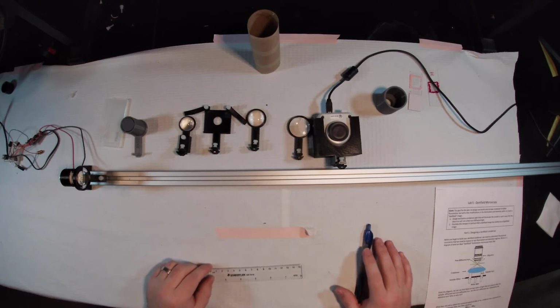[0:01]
All right, welcome back. This is Lab 6, Darkfield Microscopy. So in the last lab, we had fully assembled a Kohler microscope, but for brightfield illumination, where our contrast was dark compared to our background. We're going to be inverting that optically in this lab with darkfield microscopy.
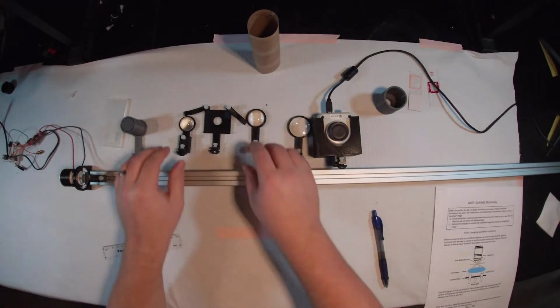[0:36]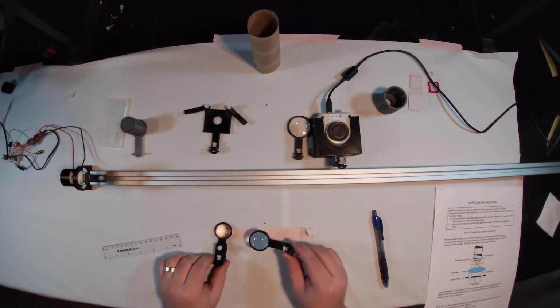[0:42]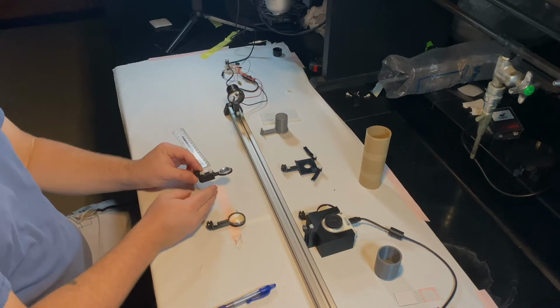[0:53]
So the first thing that we have to consider with darkfield microscopy is there's going to be restrictions, as you should remember from your exam, on the numerical apertures of our condenser and objective lenses. Now, these are actually labeled condenser and objective, but today we're not going to be using them in those roles. We're actually going to be flipping them such that the lens labeled objective is in fact our condenser, and our lens labeled condenser is in fact our objective. So we're going to be figuring out why that is mathematically before we begin assembling anything.
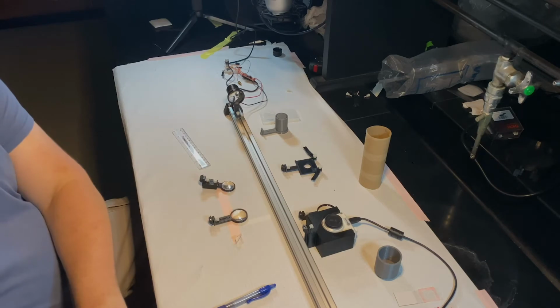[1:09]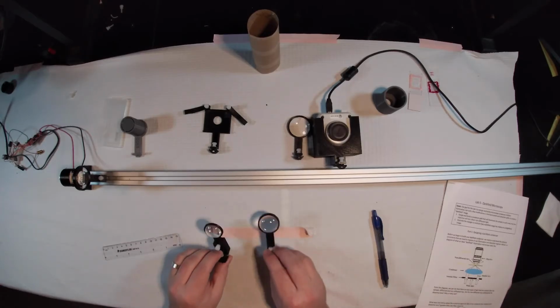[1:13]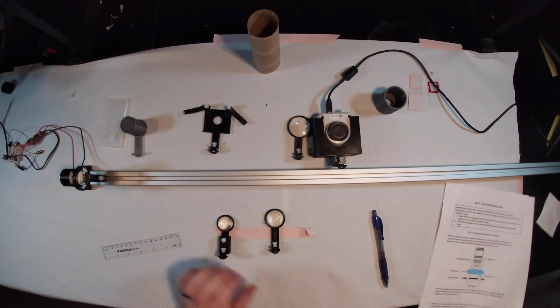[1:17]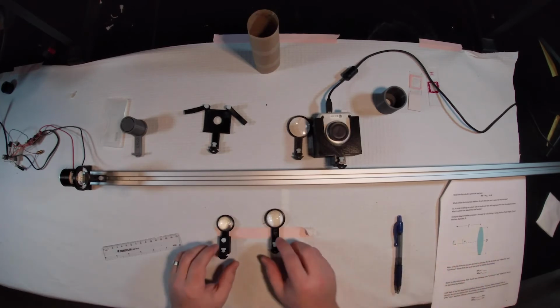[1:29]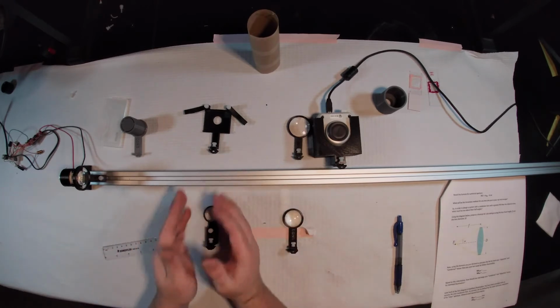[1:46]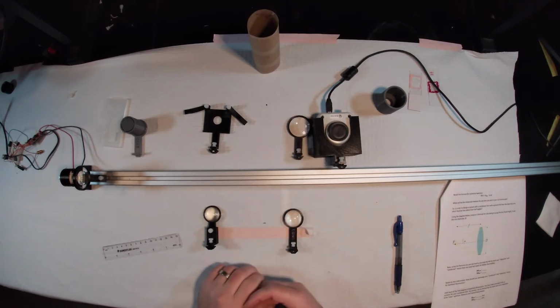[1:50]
So what you're going to be asked to do is calculate the relative numerical apertures of both of these lenses. In order to do that, we've provided you a nice diagram on your labs that relates the focal length of a lens to its half angle and its diameter. And from that, you should be able to calculate numerical aperture. So you should know which of these lenses needs to have a greater numerical aperture for darkfield microscopy. Does our condenser lens need a greater numerical aperture, or does our objective lens need a greater numerical aperture for darkfield to work? You should be able to answer that, and then we're going to calculate what the numerical apertures of these lenses are.
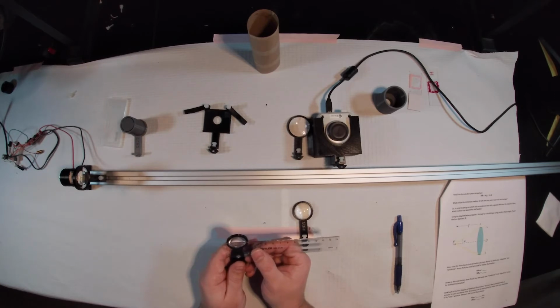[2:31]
So you should go through and derive that formula theoretically to calculate the NA just from knowing the diameter and the focal length of a lens. I will provide you with the diameters now. So for our lens that's labeled objective, our total clear aperture looks to be about 24 millimeters. That is the diameter of the light that it allows through.
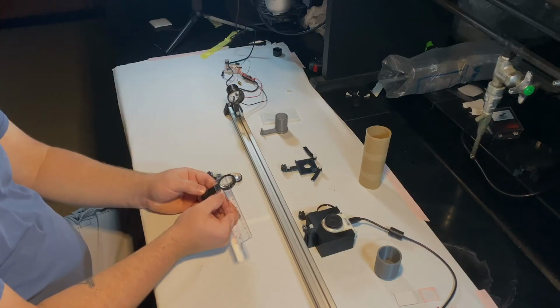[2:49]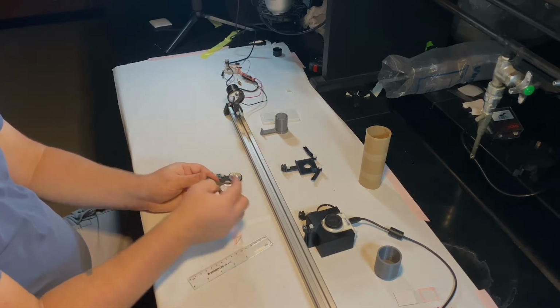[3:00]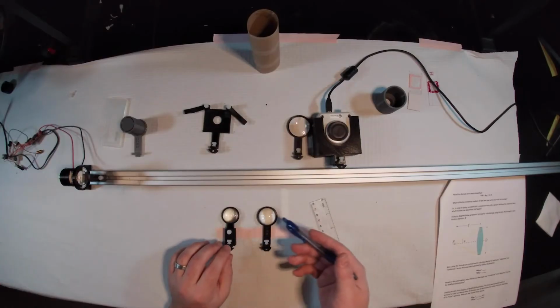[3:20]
Our lens labeled condenser, our diameter is 22.5 millimeters. So that is the diameter of the clear aperture where light is allowed to pass through. You should already know these focal lengths from Lab 2. Go ahead and reference those if you don't have them handy. And using that formula that you derived, go ahead and calculate what is the numerical aperture of each of these lenses. And I'll go ahead and pause the video for that.
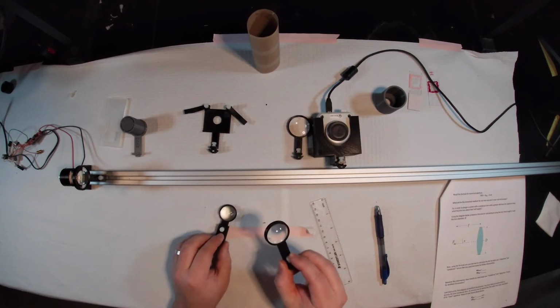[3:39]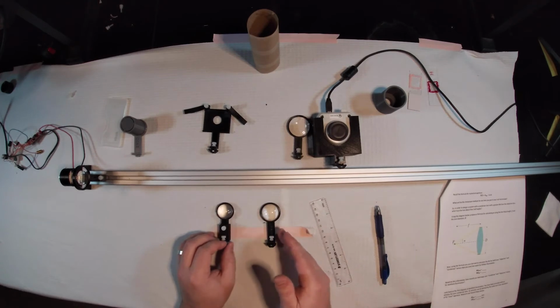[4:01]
So now that you've calculated the numerical apertures, you should know that obviously our objective lens, the one labeled objective, has a greater numerical aperture than our condenser lens. So we have to use this lens labeled objective as our condenser, because in darkfield microscopy, you need a higher angle of illumination that cannot be collected by your objective. So we actually have to sacrifice a bit of resolution by using our second best lens as our objective lens, which does cut down on the total amount of light that we let through and the total resolution of our system.
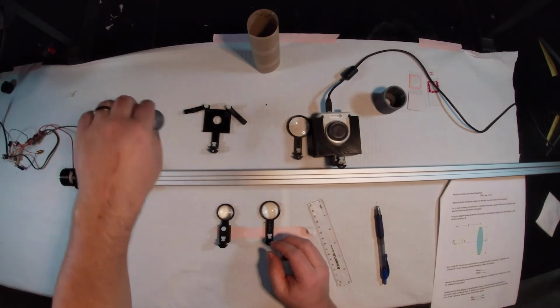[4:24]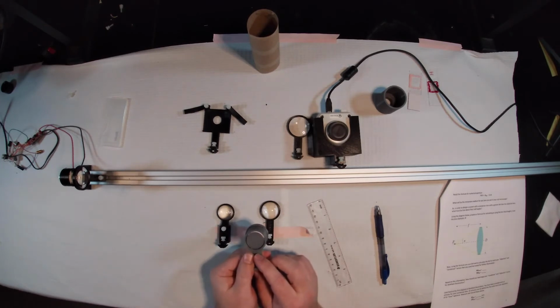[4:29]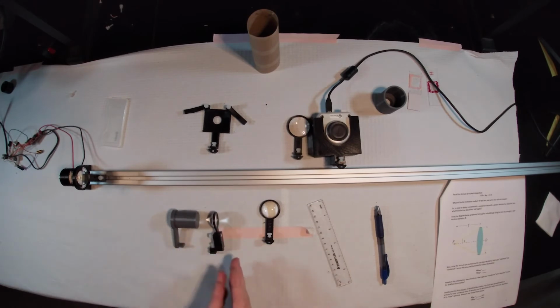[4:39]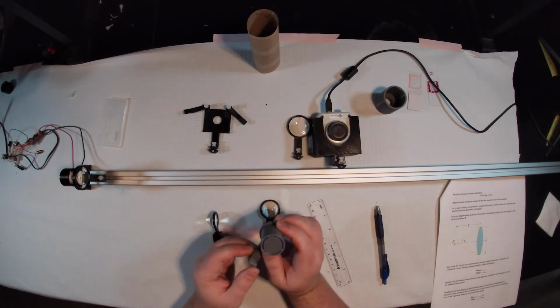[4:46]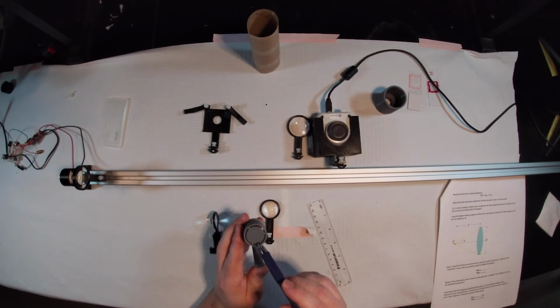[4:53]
So finally, for darkfield, you do need an annulus. This is going to be placed somewhere behind the condenser lens that we are actually using, the objective lens that's being used as our condenser in the system. We will find a place somewhere behind it that we will use to restrict out the lower angle light and let through just an annular sliver of light.
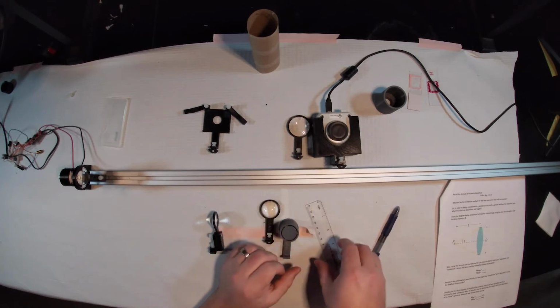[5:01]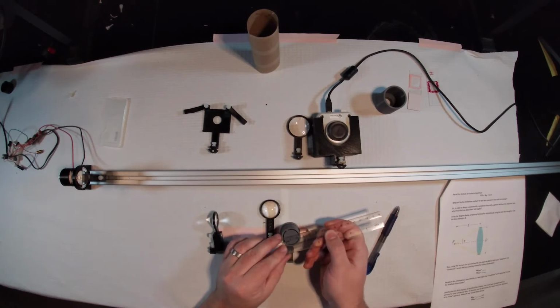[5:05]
So I will go ahead and measure these dimensions. An annulus has an inner and an outer diameter. So the outer diameter is about 24.5 millimeters. That is the distance from the outer edge to the outer edge. And the inner diameter is 23.5. That is the length from the inner edge to the inner edge. So this was specifically designed with this lens in mind.
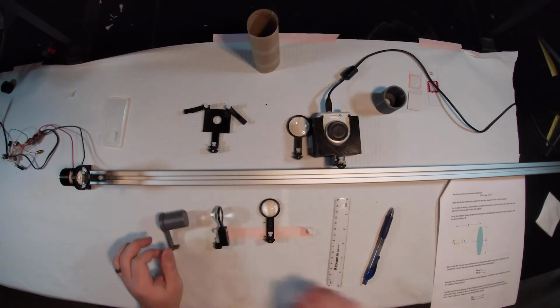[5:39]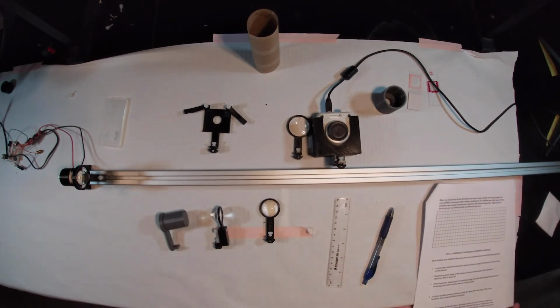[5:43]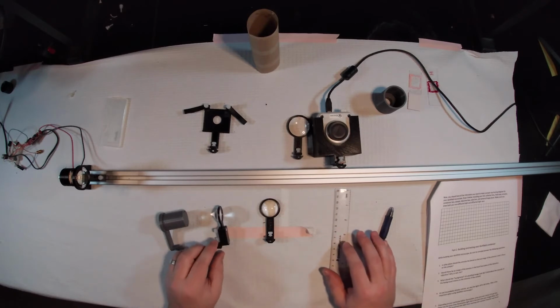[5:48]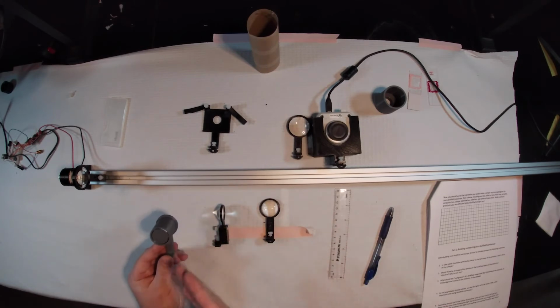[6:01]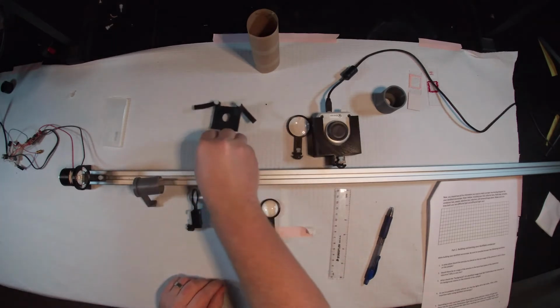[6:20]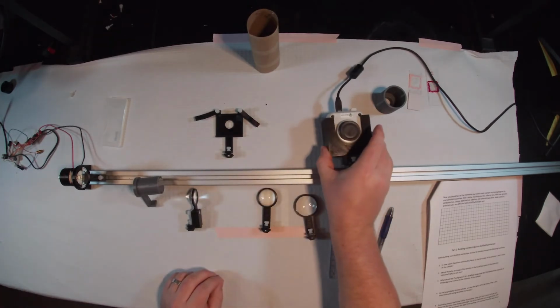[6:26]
So you go ahead and record those down, and now you have all of the information you need to do a proper ray tracing diagram of this darkfield microscope, even though I haven't assembled it yet. We're not going to be using our iris today because our annulus will act as our iris, because we only want a very small sliver of light getting through. And we have our nice little collimated light source. We're going to put our annulus, our condenser lens, our sample holder, our objective lens, our tube lens, and then finally our camera.
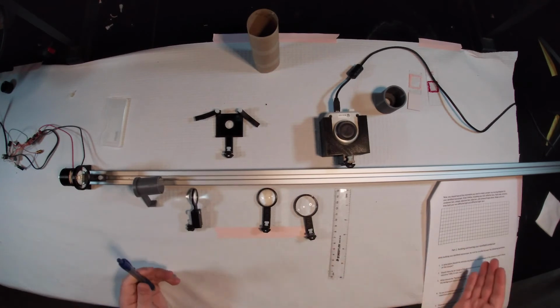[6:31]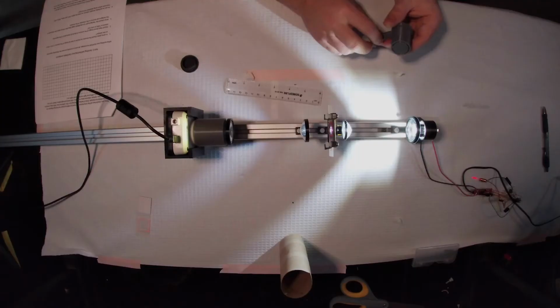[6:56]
So as I am assembling this microscope, go ahead and draw out, using the graph paper on the lab that we provided for you, the ray tracing diagram for this Darkfield microscope. You can pause the video. When we come back, we will have this microscope set up, and I will go through the finer alignments. All right, so hopefully you have made a nice ray tracing diagram of what you expect this Darkfield
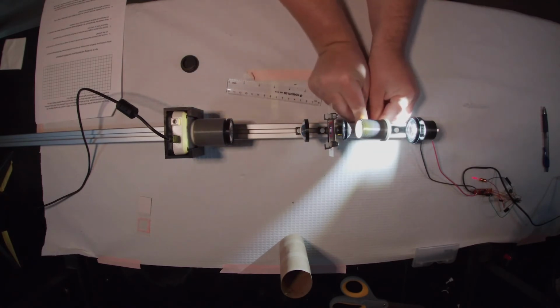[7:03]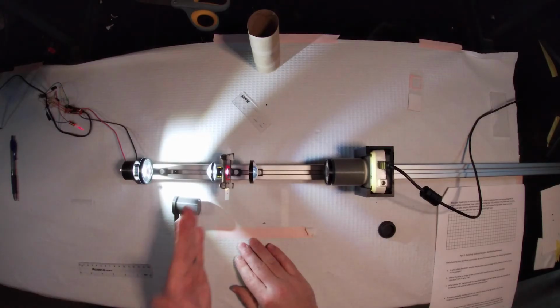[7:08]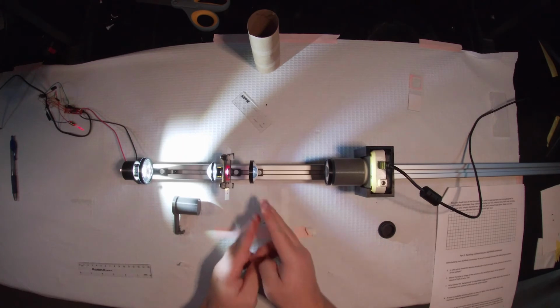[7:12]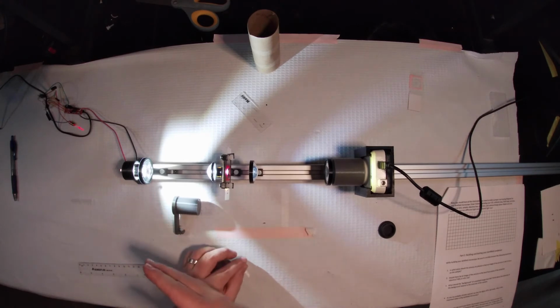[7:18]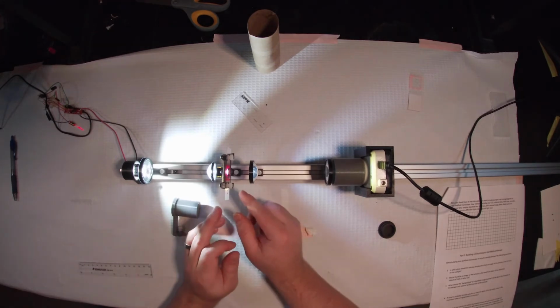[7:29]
microscope to look like. In the meantime, I've been building and aligning this. You can see we have the objective lens in the condenser position and the condenser lens in the objective position. Again, just to make sure that our condenser has a higher numerical aperture than our objective, and in our kits, this is the highest numerical aperture lens that we have. And I already have mounted a sample of my hair.
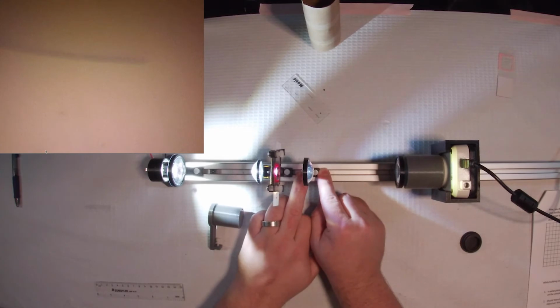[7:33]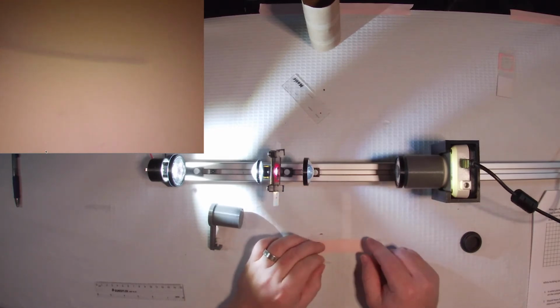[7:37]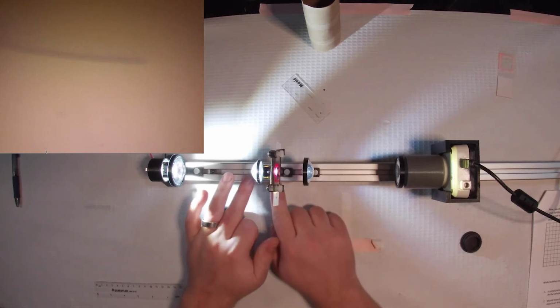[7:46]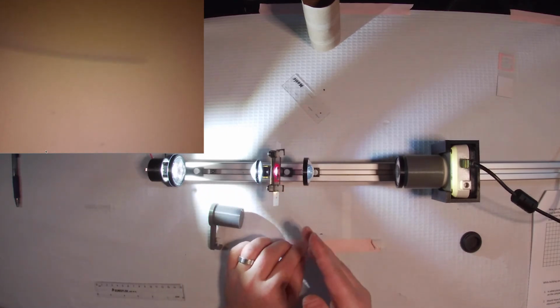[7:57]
You can see that it looks similar to what we've seen in the previous lab, where we have a bright background and dark foreground because the hair is effectively just absorbing the light. It's not going to look as crisp because our condenser has such a high numerical aperture that it does tend to under-illuminate in terms of the field of view, the total area that is picked up by our objective lens, but that's just a flaw in the system.
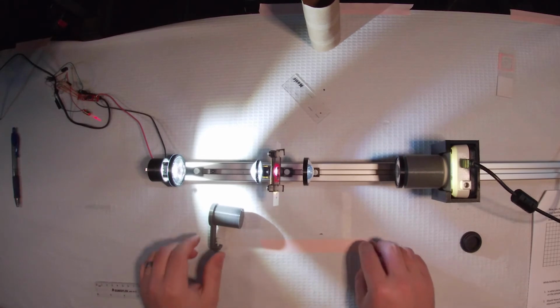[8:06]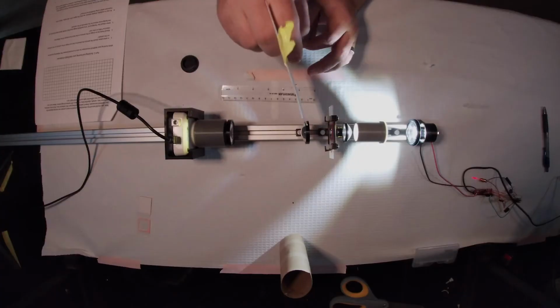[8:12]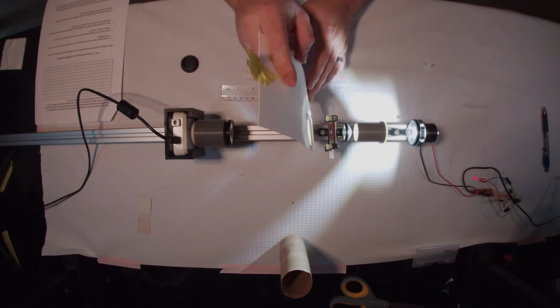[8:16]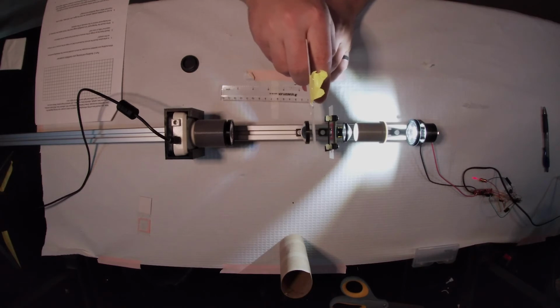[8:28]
What I haven't installed yet is this annulus, right? This is what is essential for giving us that dark field contrast. We're going to need to put this somewhere in between our collector lens and our condenser so that the image of this annulus as cast by the condenser is going to be perfectly out of focus on our sample, but still not collected by our
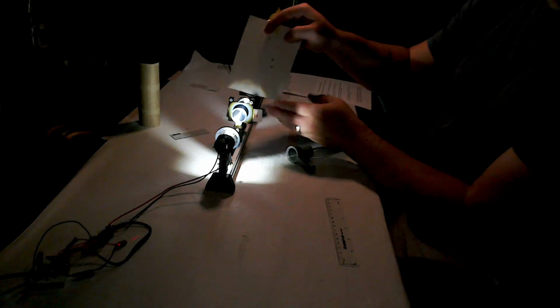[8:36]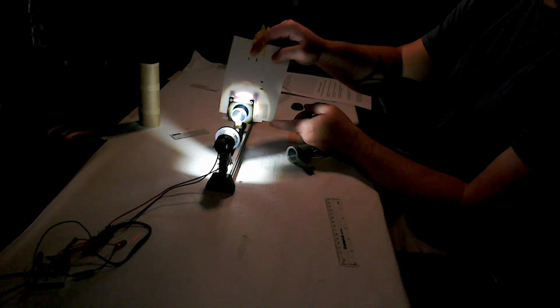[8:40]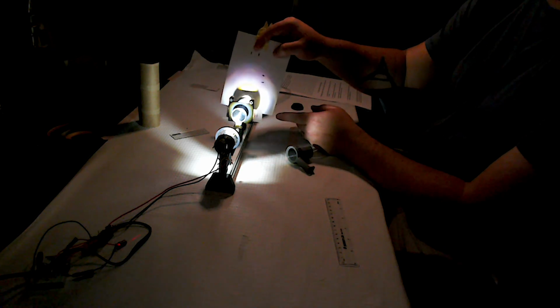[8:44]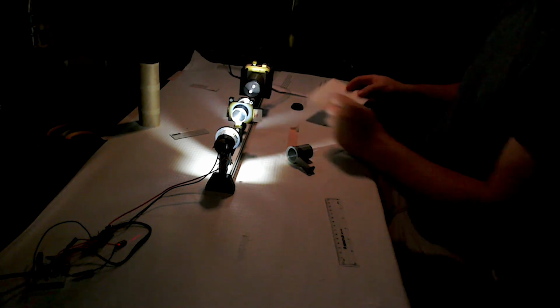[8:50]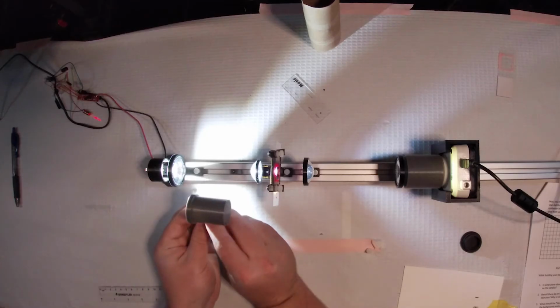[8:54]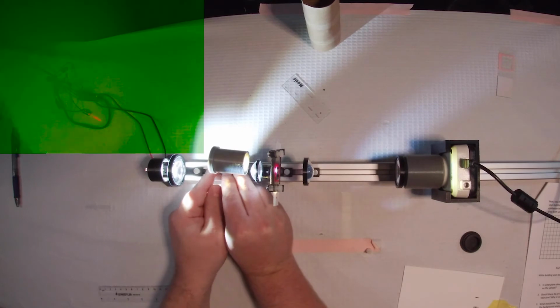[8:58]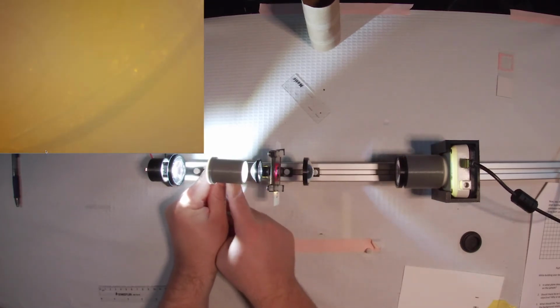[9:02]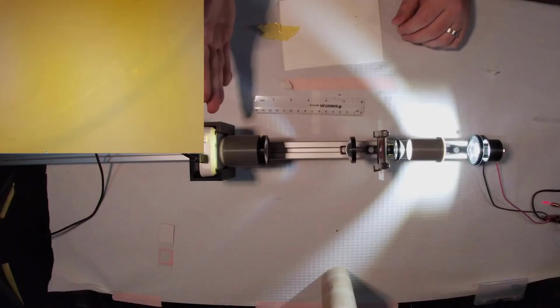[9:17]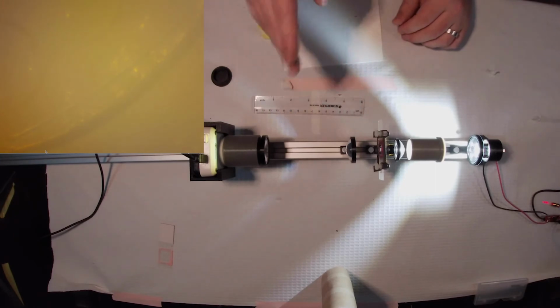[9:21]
objective lens. And you can see that obviously a lot of light is getting through our sample and it hits our objective lens, and you end up with dark contrast and a bright background as a lot of light is passing by this objective lens into our tube lens. So if we go ahead and install this annulus here, tighten that down, and I will try to position it.
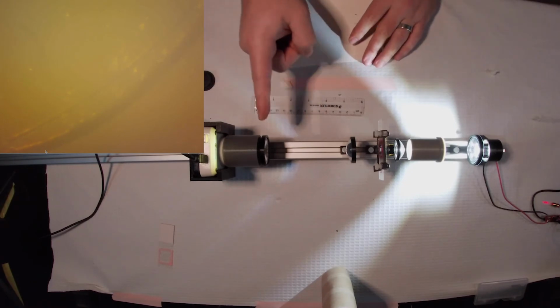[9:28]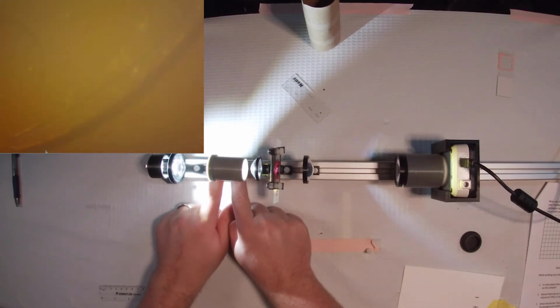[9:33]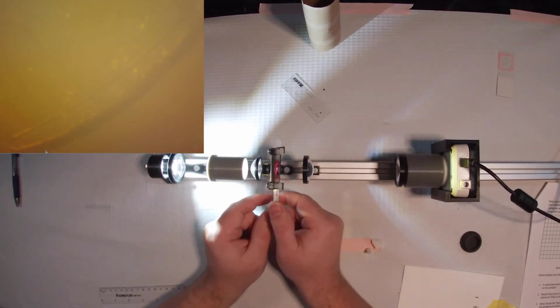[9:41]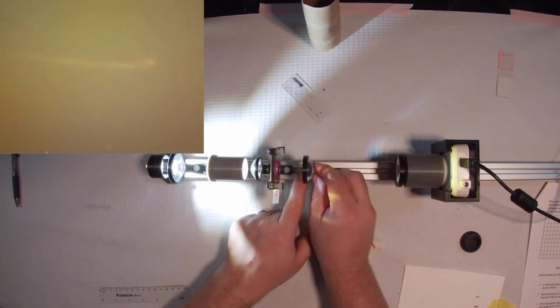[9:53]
Right, so you should have probably determined that the optimal place for our annulus is in the back focal plane of this condenser right here. So you can see it's very sensitive to any sort of changes in alignment. I'm just trying to adjust it so that my background is as dark as possible. Let's try to move to, yeah, I seem to have lost my hair in that installation, but there is my hair once more. I will do a little bit of focusing just to make sure that that's nice and
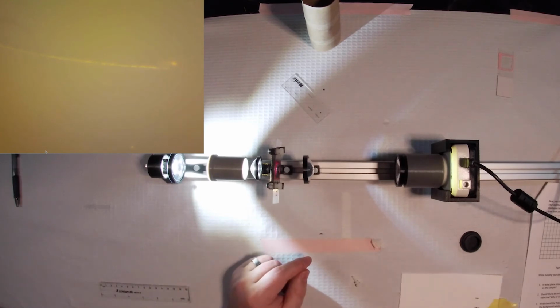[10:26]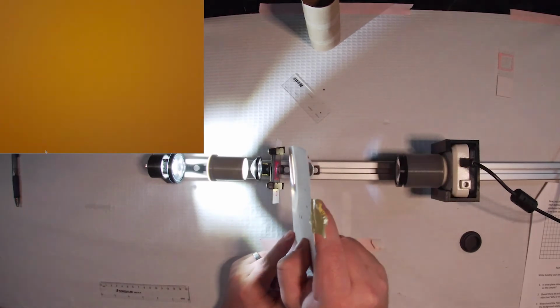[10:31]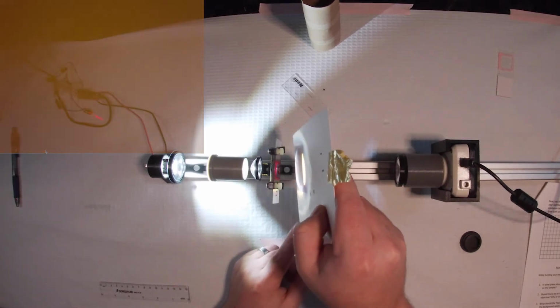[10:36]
in focus, and you can now see that the hair is no longer dark on a bright background. You can see that the edges of the hair, especially that lower edge, is bright on a dark background. That is because the image of this annulus is being cast by our objective lens onto our sample. And any light that doesn't interact with our sample just passes by and is not collected by our
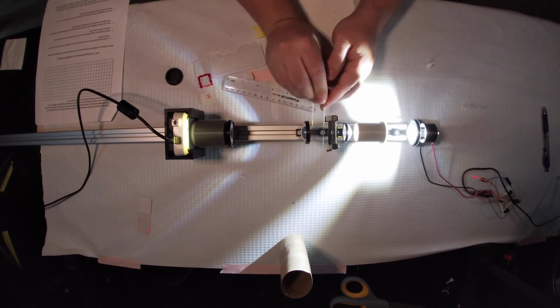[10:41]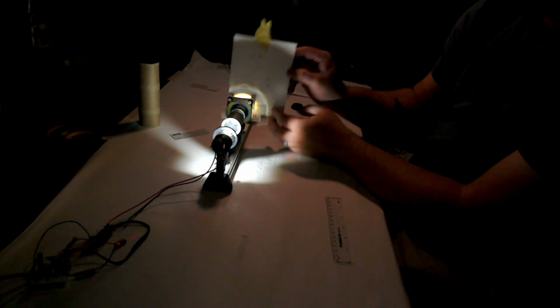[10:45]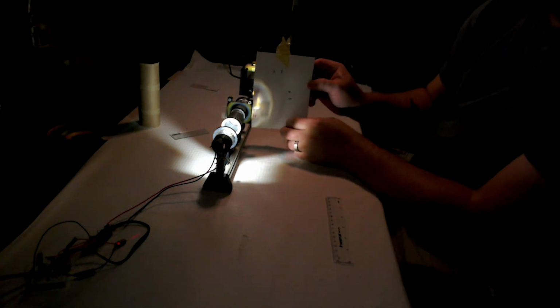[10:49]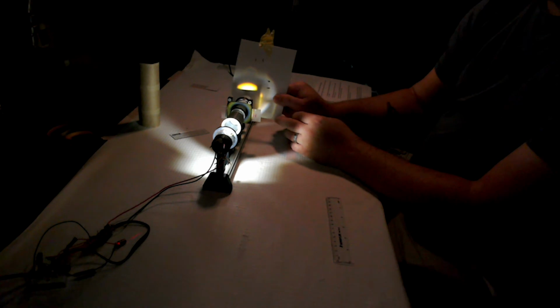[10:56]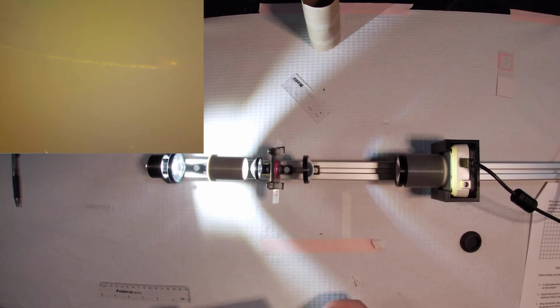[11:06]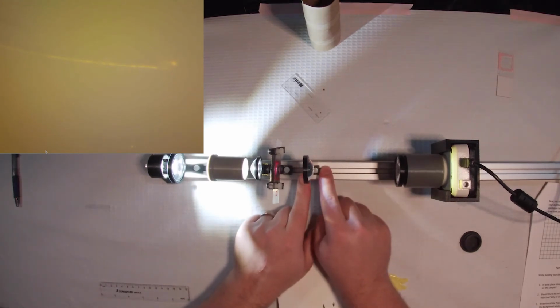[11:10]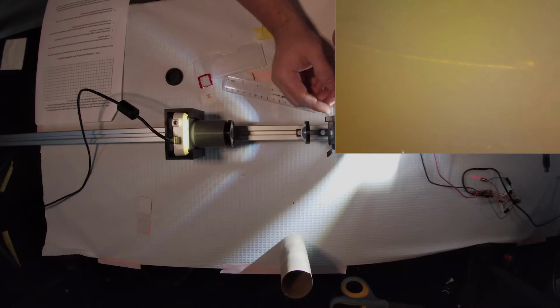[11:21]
condenser lens. You can actually see that there is a nice wide annulus of light that misses our objective lens here. So the light that's actually coming out of this objective, while it's very little, does contain the information of the diffracted light as it passes near the hair. So that light that gets really close to the hair will diffract, and some of it actually diffracts into this lens, and then is effectively just collected by our
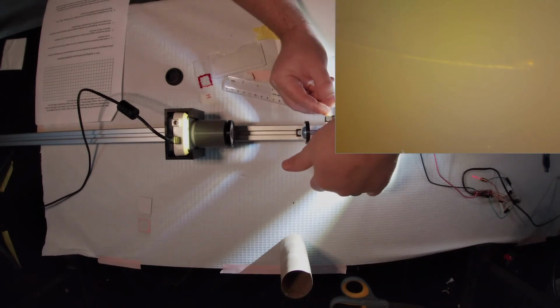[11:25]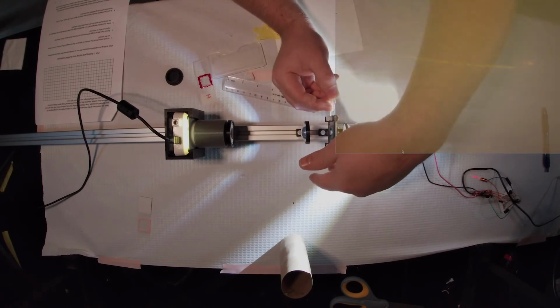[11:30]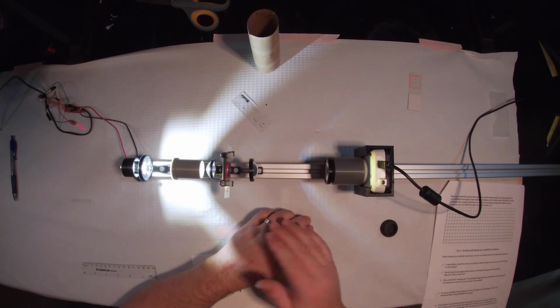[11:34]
tube lens. And you'll notice that there's something that I haven't talked about yet, which is this gray tube. This is actually the namesake of the tube lens.
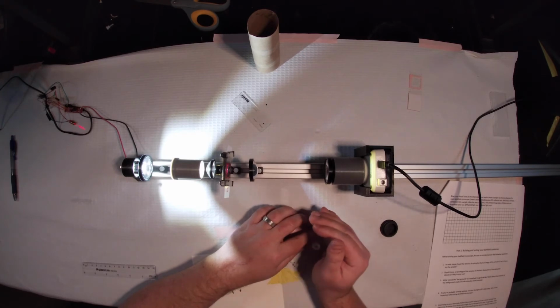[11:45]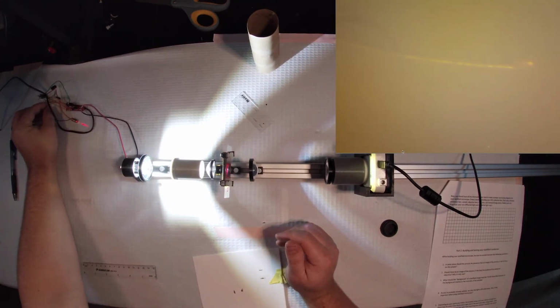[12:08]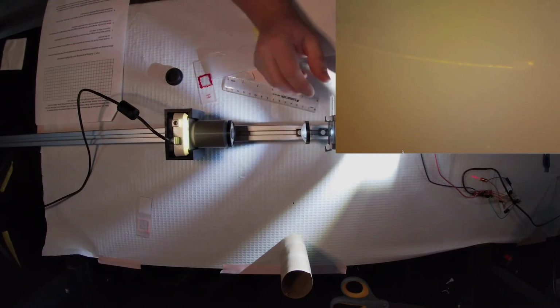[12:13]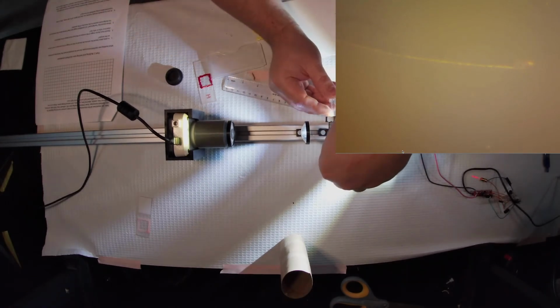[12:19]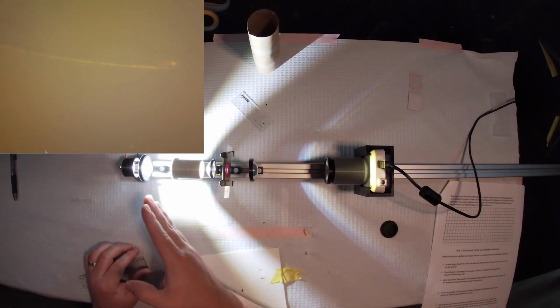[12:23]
So in darkfield and in other modes of microscopy where you have positive contrast, which is to say that your sample is brighter than your background, you want to minimize any stray light hitting your pixels or your image plane as much as possible, because your sample here is effectively very dim compared to what it would normally be like in darkfield or in brightfield contrast. So any stray light that makes its way from any light sources in the room, or even stray light that makes its way past all of our lenses, might scatter off of the floor or the ceiling and then make its way into the camera lens. That might be enough to drown out our small amount of signal from our diffractive sample.
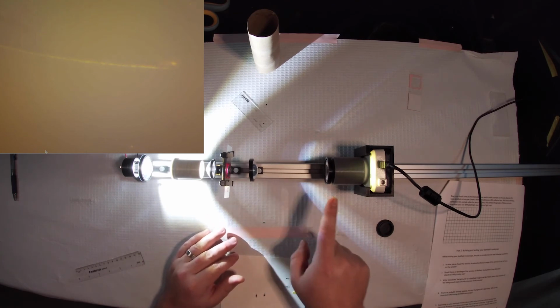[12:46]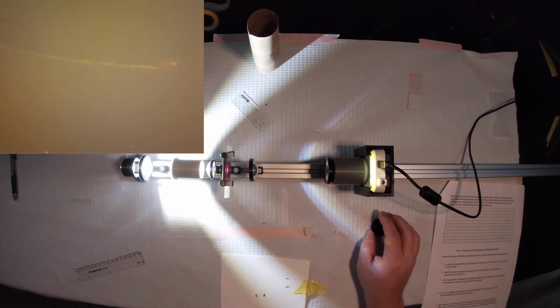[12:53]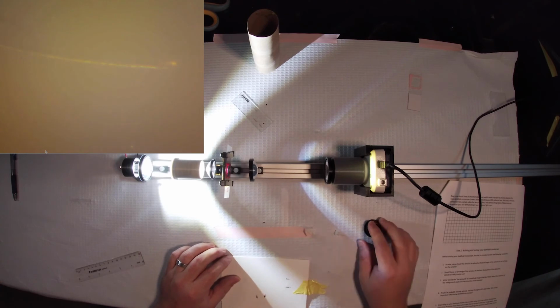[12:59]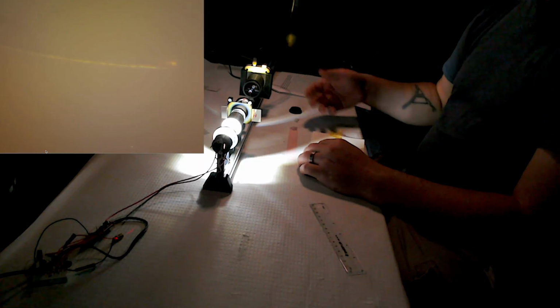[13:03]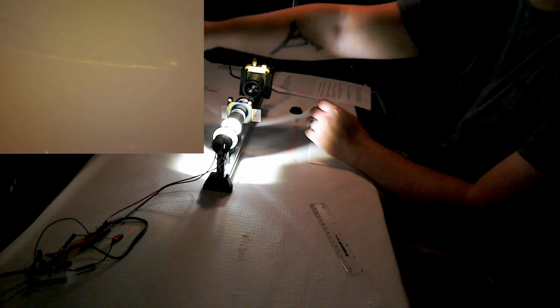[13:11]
So in order to prevent that, we have this tube which will effectively only let in light that's passing through this tube lens onto our image plane. So just a way to maximize contrast in your darkfield setup is to use this tube. Sometimes you will even see people using paper towel tubes that work really well, just as a way to block out any stray light that might make its way past the tube lens.
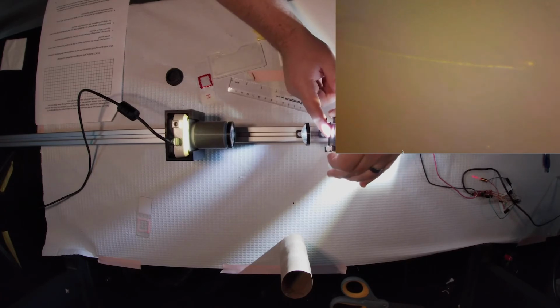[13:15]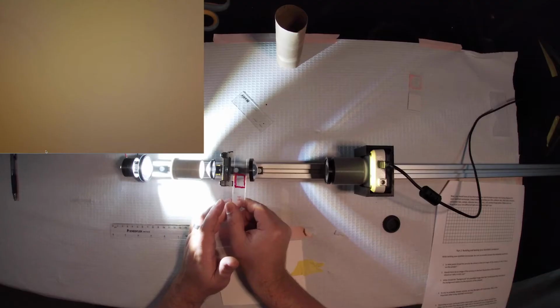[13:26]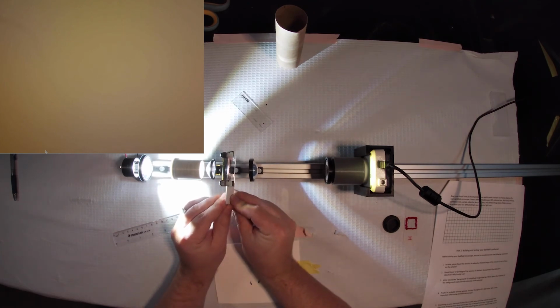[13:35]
So while hair is a nice sample to illustrate the absolute differences in bright and dark contrast, it's not the most biologically active or interesting sample to look at. So I have prepared, as with last time, another sample of pond water. And we will see the differences that we can pick up as we illuminate with darkfield. So let me slide this in there. And there's always interesting stuff to find in the pond, even if it's just plant life. Let me move this around and get something in focus.
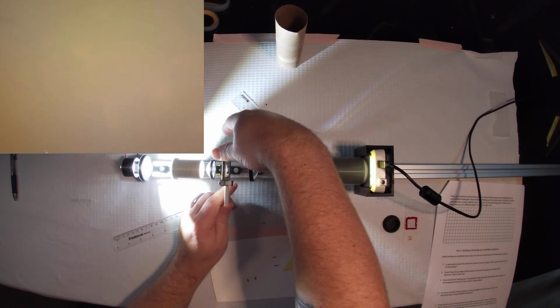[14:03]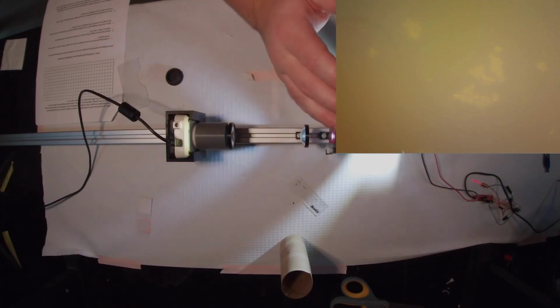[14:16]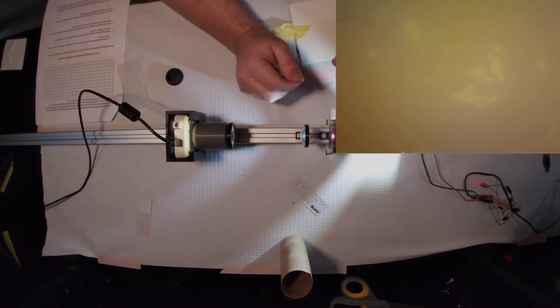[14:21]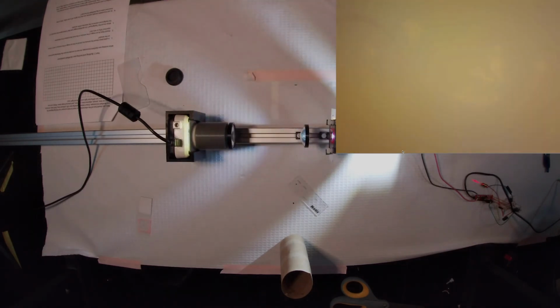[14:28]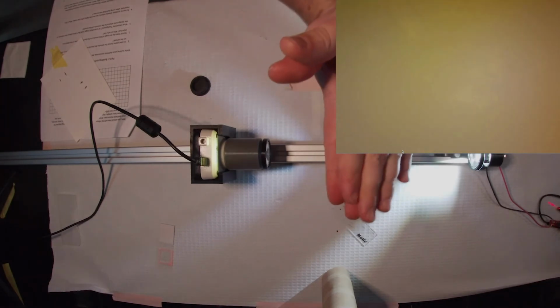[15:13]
So you can see I've picked up a little bit of probably algae, and you can see that it is bright on a dark background. And you can see I have probably not perfectly aligned my annulus, because there is a place where I inadvertently put my finger in the infinity space between our objective lens and the tube lens, and you can see that that actually makes a small difference, at least in terms of the contrast. Obviously I'm losing quite a bit of information by doing this, but I'm at least increasing the contrast. So there's definitely a little bit more that I could do to align this annulus. And you can see it's very sensitive as I bring this forward and backward. You really increase the intensity of that background.
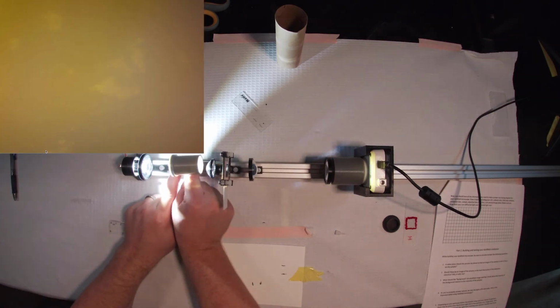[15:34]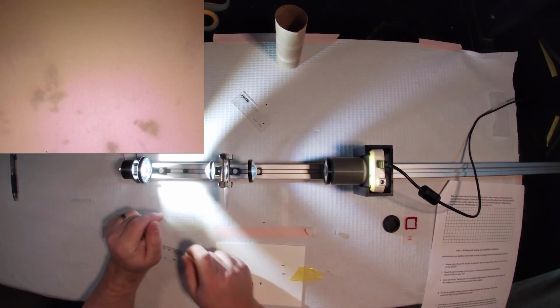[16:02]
Right, and if I remove this annulus and we effectively switch back to brightfield, you'll see the difference that it makes. We'll end up with very, very dark algae, because again, algae is photosynthetic. It has lots of pigments in order to absorb all that sunlight that it needs. And it's quite dark in this brightfield setup against that bright background. So a lot of the color actually gets washed out in this case.
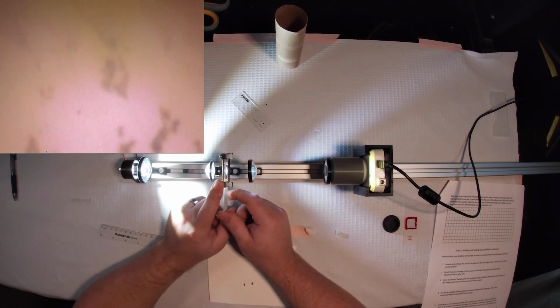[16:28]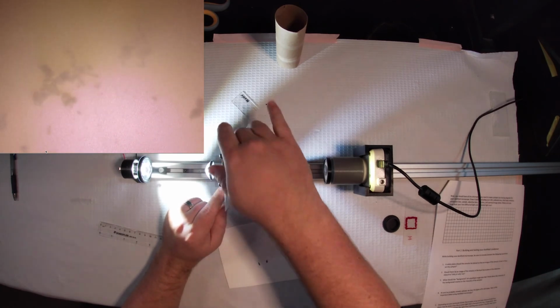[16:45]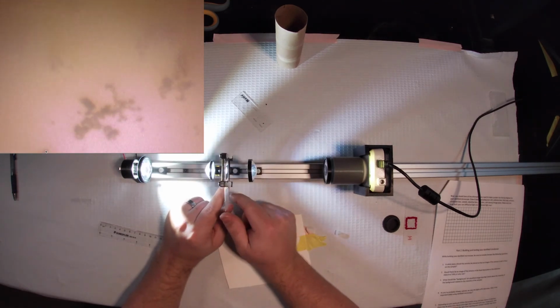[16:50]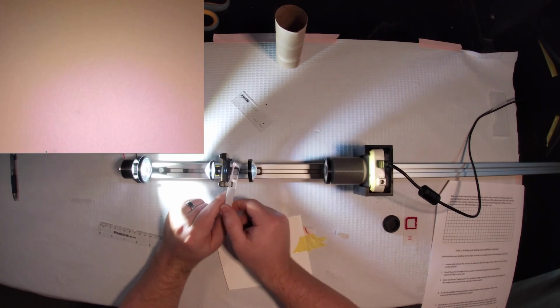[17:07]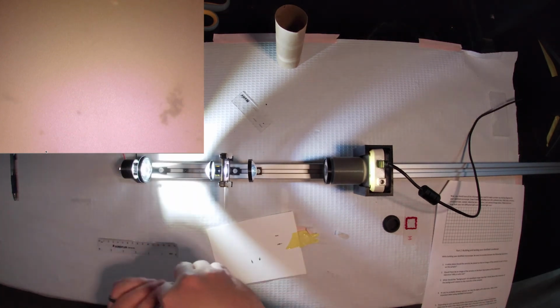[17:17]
But again, thinking back to your exam, darkfield has one glaring fundamental flaw, which is that we have put an upper limit on the numerical aperture of our detection optic. So our light gathering capacity and our resolution take a huge hit by restricting how much light we're able to collect on the detection side.
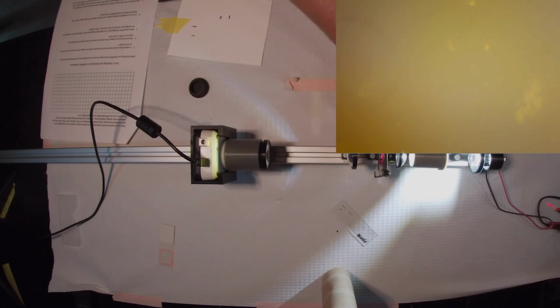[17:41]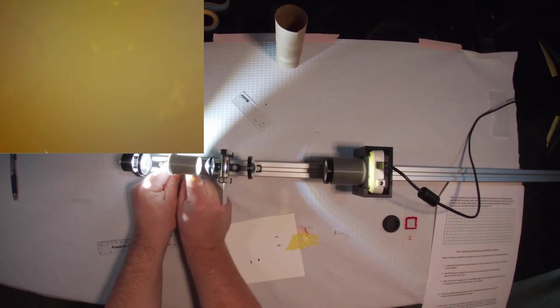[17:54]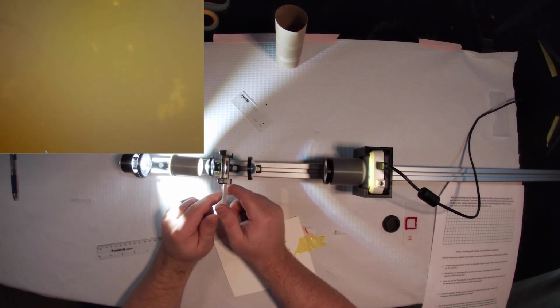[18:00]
So while darkfield is quite sensitive, and you would be able to pick out very small scattering samples with ease, you're not going to get that same resolution as in the previous lab, where we had these two objectives switched, or we had our higher NA optic on the detection side, because that's really what brings you the crispness that's necessary to resolve finer structures, even though we're able to detect them. With darkfield, we're able to see any scattering that goes on. We're not able to really resolve the finer details as well.
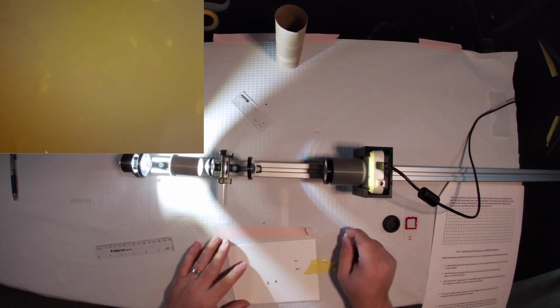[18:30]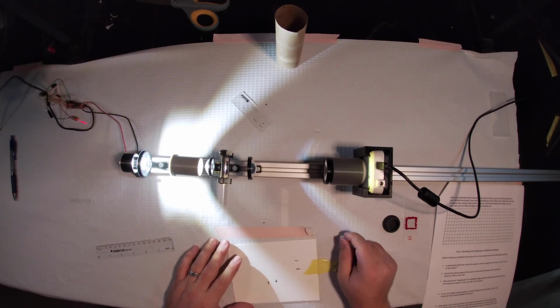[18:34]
So that concludes our darkfield lab. Next, we will be looking at another way to generate positive contrast, which is with a polarization microscope, where we'll be introducing linear polarizers into our setup in order to look at how samples will rotate the polarization of light.